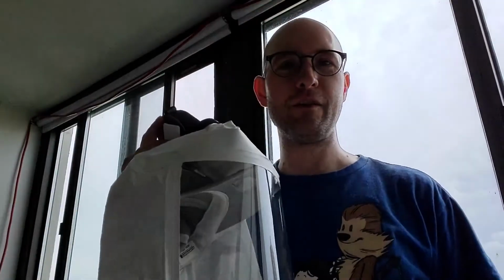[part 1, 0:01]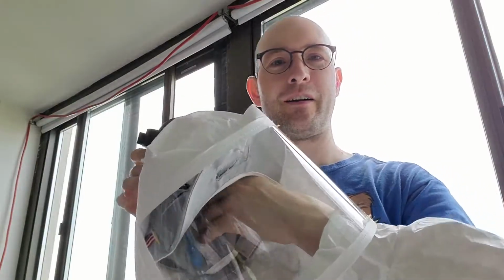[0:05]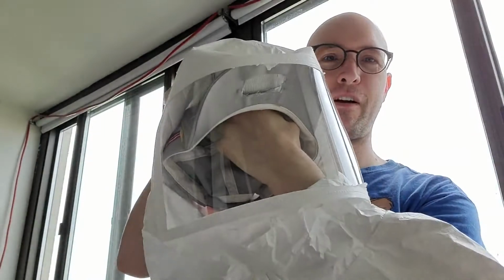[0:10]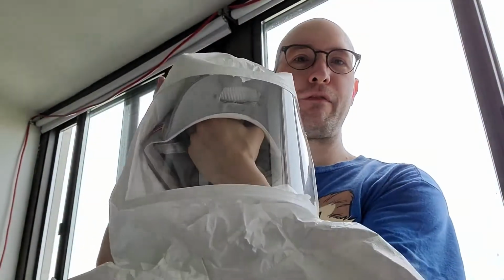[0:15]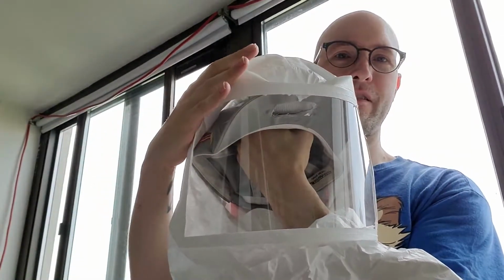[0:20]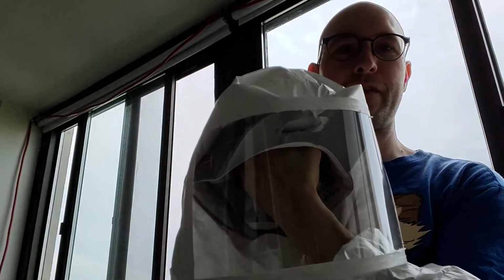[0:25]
Hello, this is my second version of a quiet device to protect from viruses with positive pressure filtered air. You can make this for about $25 if you make the helmet, the hood, which is about $50 cheaper than my initial design. So what makes this design cheaper is I got rid of the hose.
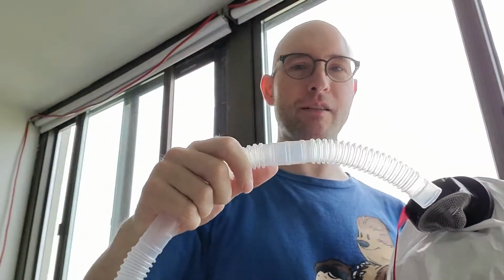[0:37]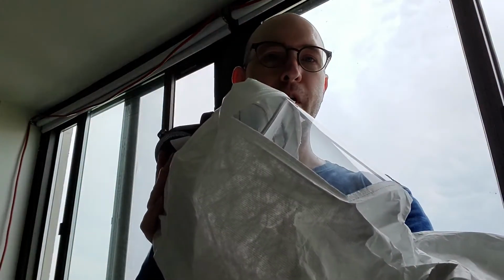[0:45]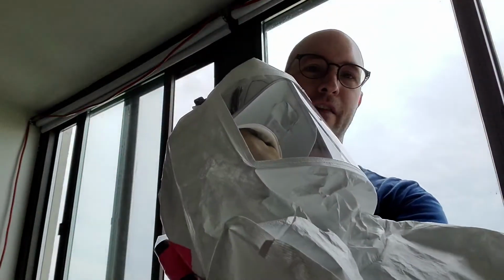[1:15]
The hose itself is about $10, but the hose also restricts a lot of air. So right now this is blowing about 2.5 liters per second. To get the same airflow through this hose, which is 22 millimeters wide, the most common hose that you can find that's made without carcinogens, because it's for people with sleep apnea and it's actually meant to deliver breathing air, I need about 2 watts to deliver the amount of air that I'm delivering right now
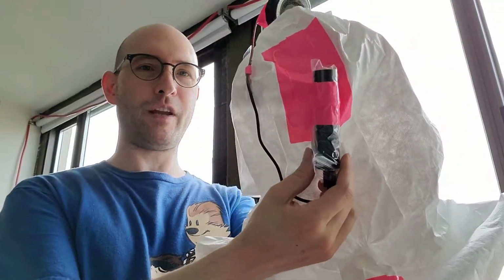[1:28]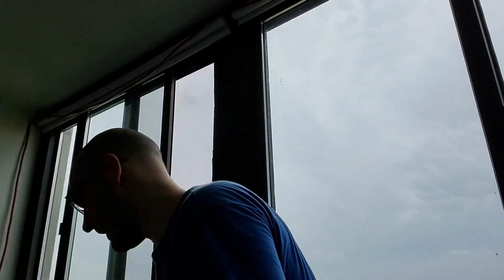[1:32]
without the hose. And this fan is running off just six tenths of a watt, so about half a watt, which means this little battery will run it for about 30 hours. For my first design,
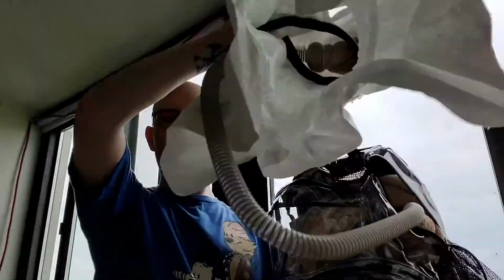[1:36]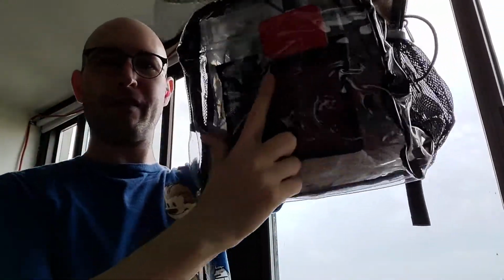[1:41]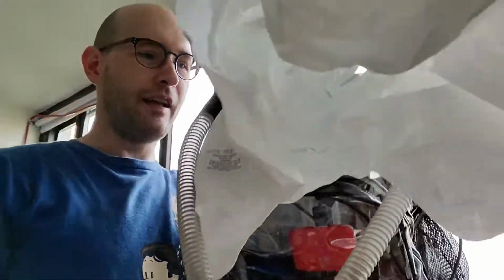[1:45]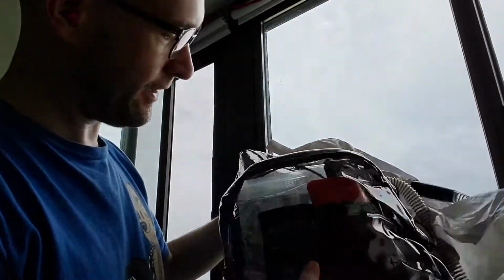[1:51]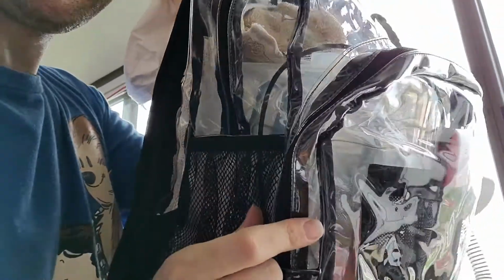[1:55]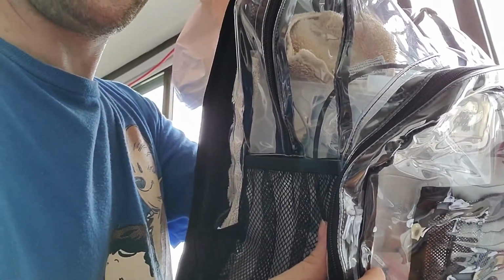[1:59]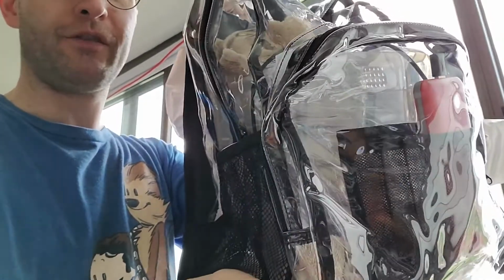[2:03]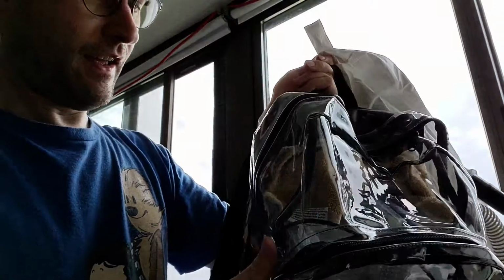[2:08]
I needed a battery like this, which is about $25 if you buy it. And then also it needed to run at more than 5 volts. So I needed another device. Probably can't see through here that well. There's a voltage regulator in here, which ups the voltage to the point where it's running at about 2 watts and I can get the airflow that I need. And so that adds about another $10 if you get 10 pieces, or $6 if you just get one of them, but still adds to the cost.
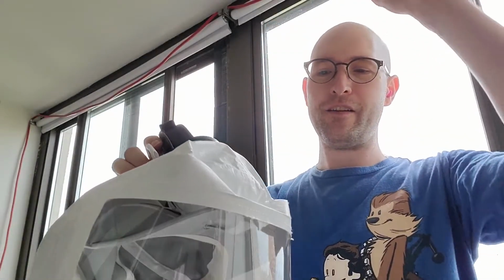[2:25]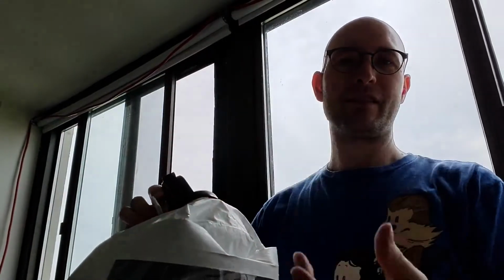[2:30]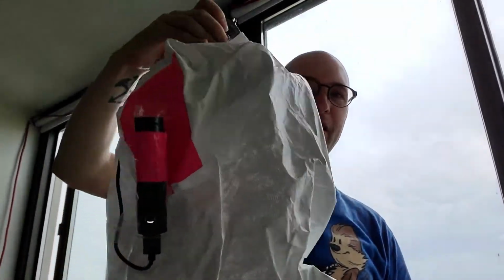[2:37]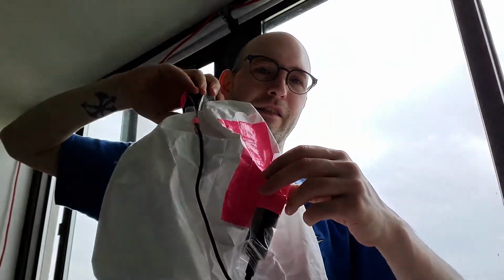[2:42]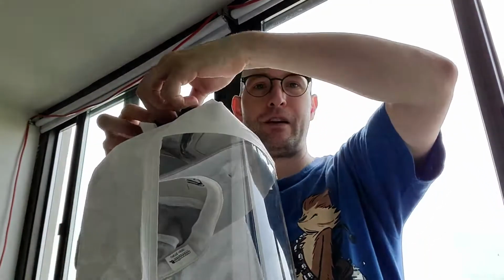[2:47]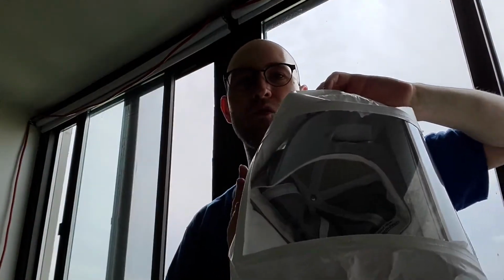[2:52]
So, this one's also a little bit simpler and there's one less connection. So if I had filter, fan, hose, mask, that's an extra set of connections. So I'm also reducing the number of connections, which makes for a more reliable device. So this little battery will run this for 30 hours, just like if I was using the other one with a hose. Also, this is a bit easier to carry around and it's quieter. So I definitely recommend this hoseless design.
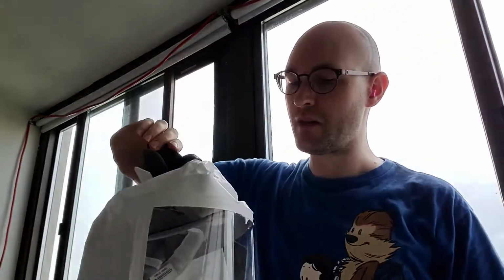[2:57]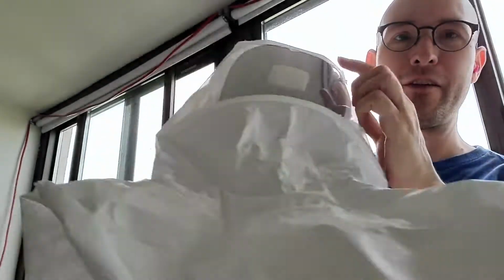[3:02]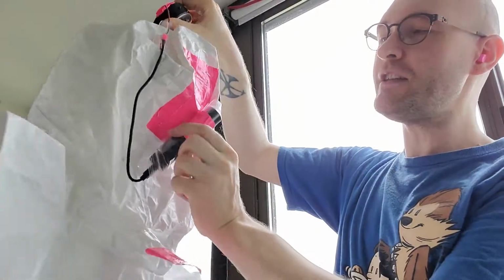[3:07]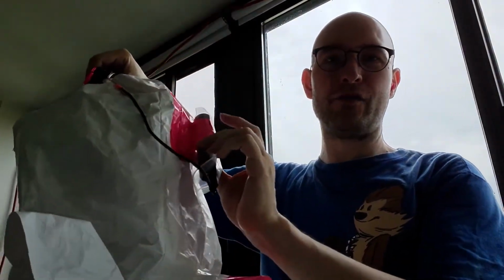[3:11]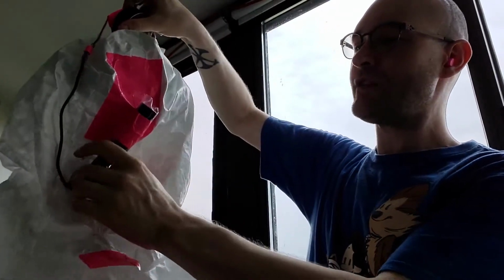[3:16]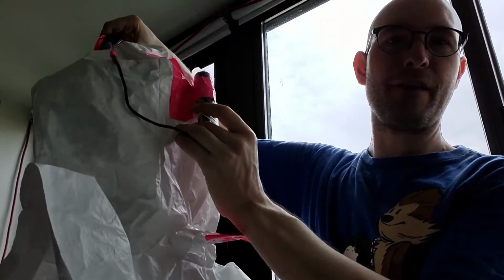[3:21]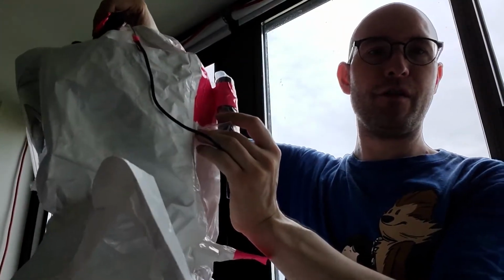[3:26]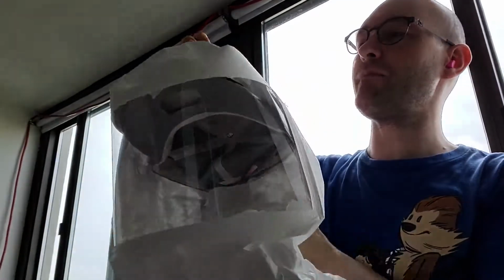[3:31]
So pretty much all you need is a fan. I use a filter from a Roomba. And you need a small power supply. Sometimes if there's a college open house, they'll give away small USB fans. This one's supposed to be 18.5 watt hours. I'm not sure if it's one of the ones that you'd find, but even a very small one would probably easily give you 8 hours, but you'd want to test it to make sure.
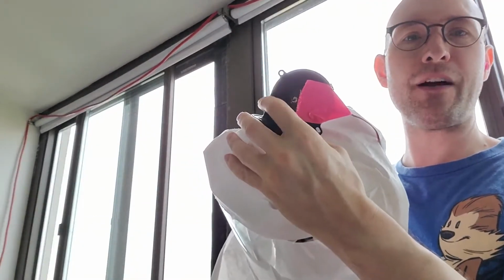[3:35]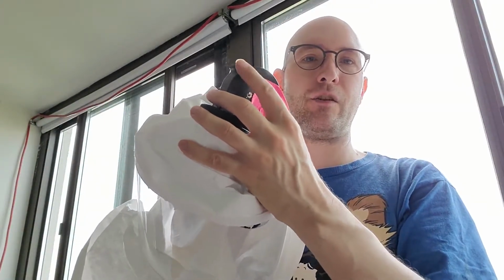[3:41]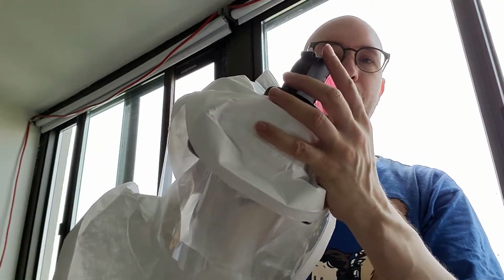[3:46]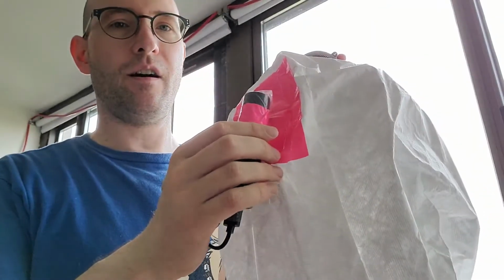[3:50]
And a fan like this, you can often find them on computer graphics cards, the higher performance ones, but if it's like 10 years old, someone might be getting rid of it, and you could get a fan like this from that. So you could make something like this with a bit of scrounging and actually make it without paying any money. I'm working on a mask.
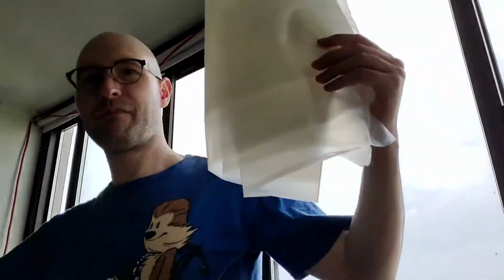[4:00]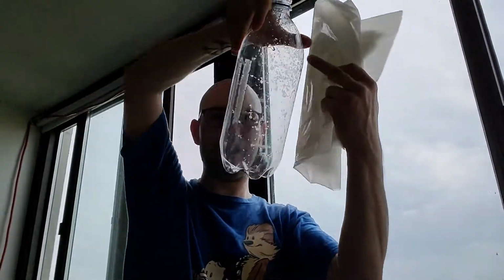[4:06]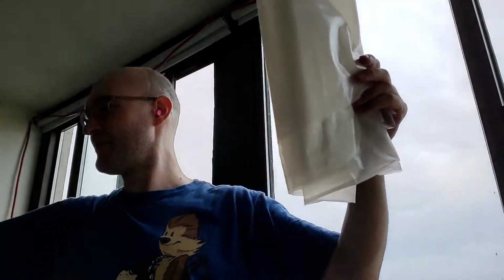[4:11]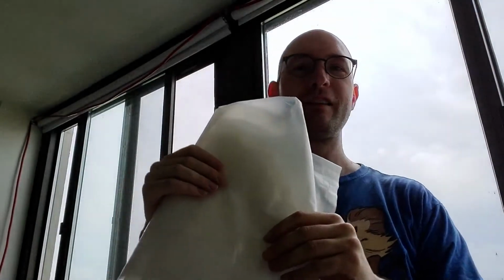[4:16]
You can use a bag and 2-liter bottle, just cut the bottle open and then figure out a way to attach it to the bag. Easier said than done. But a big advantage to this, and literally big, is because if you're using a whole bag, you could have maybe an elastic strap that you could release and let air into the wider part of the bag, and you could actually eat inside of the filtered air environment.
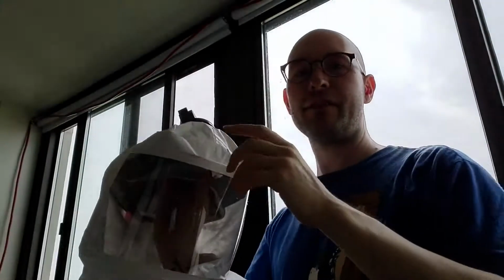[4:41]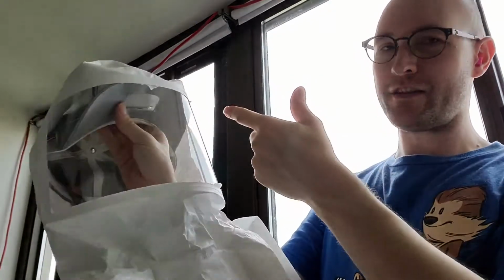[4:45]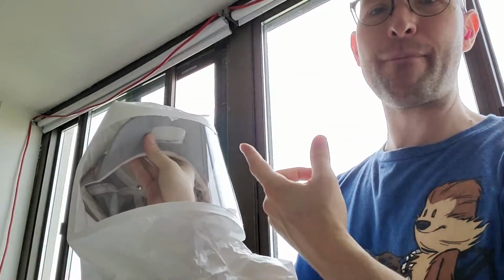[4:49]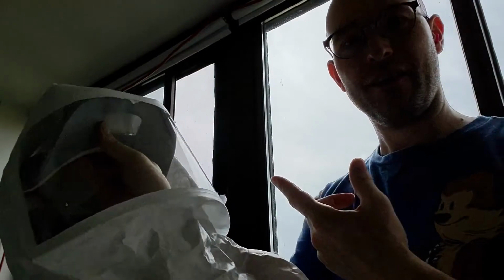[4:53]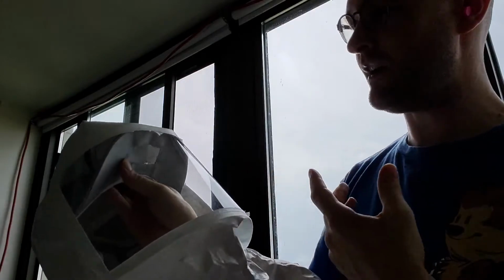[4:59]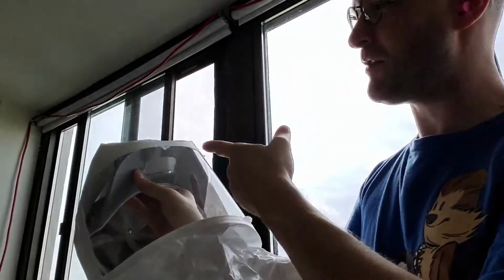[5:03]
So this fan you can get for about $9. The filters are about $1.30 each. They're advertised as HEPA replacements for Roomba, though we'd need much better consumer protections to guarantee something like that. If someone could actually test one of the filters, that would be great, then we could know exactly how to do it.
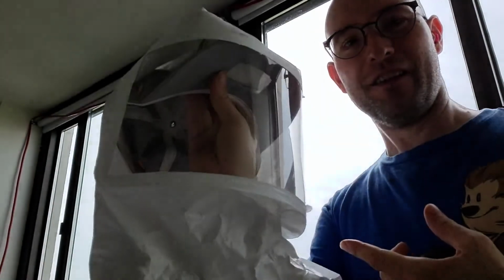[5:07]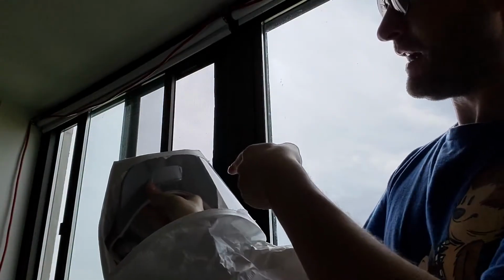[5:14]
Eventually, I might actually get around to setting up a test for that, but no immediate plans of doing that.
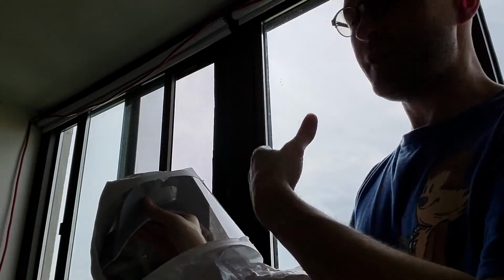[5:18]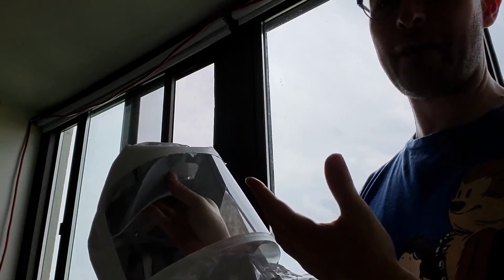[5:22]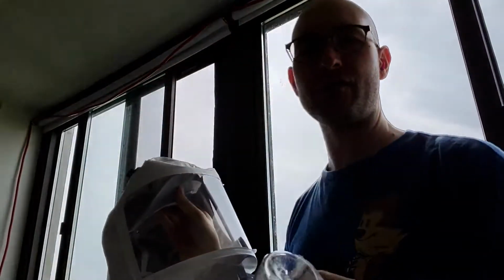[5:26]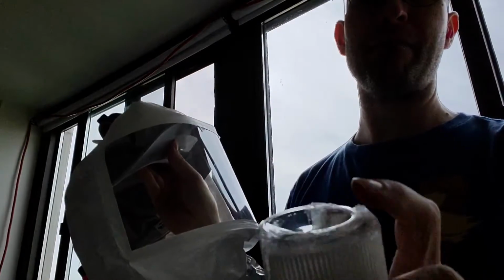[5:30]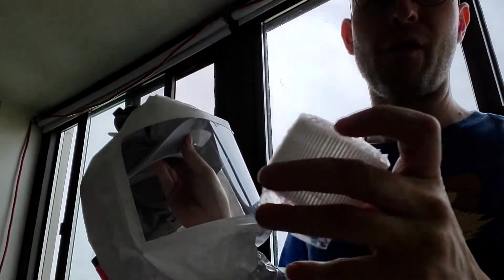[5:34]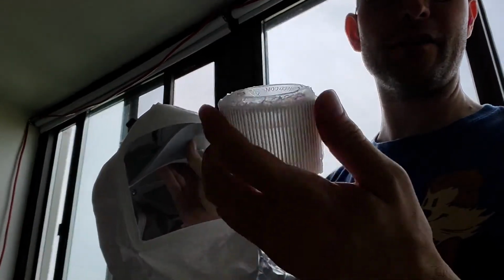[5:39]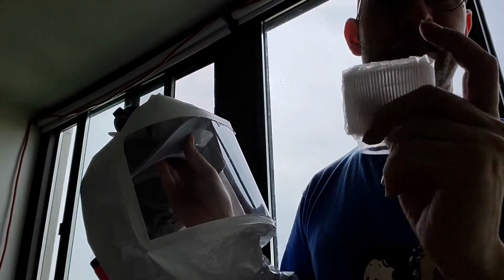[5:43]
In any case, you can get a set of 6 of these filters for $7. If you share them, then it's $1.30 each. I recommend removing them from the original housing and then mounting them so that there's a layer of glue all the way around the outside. This is to make sure that the only way for air to come in from the outside to the inside is if it goes through the filter.
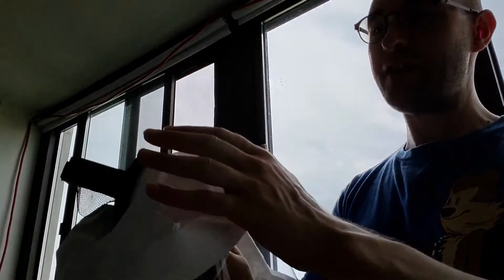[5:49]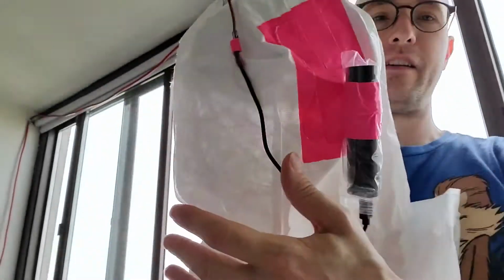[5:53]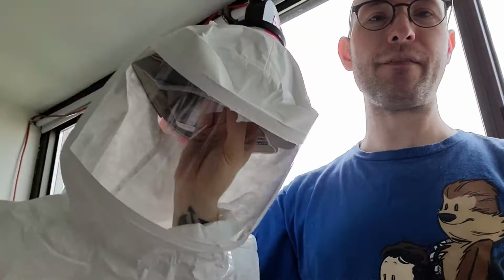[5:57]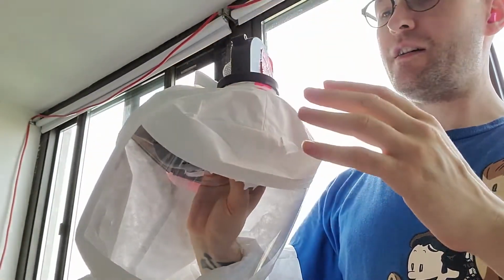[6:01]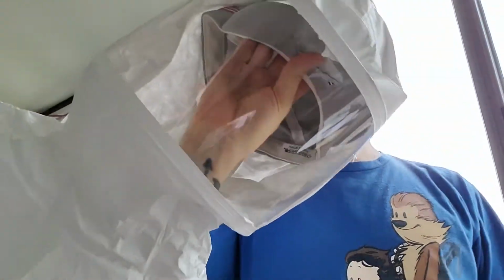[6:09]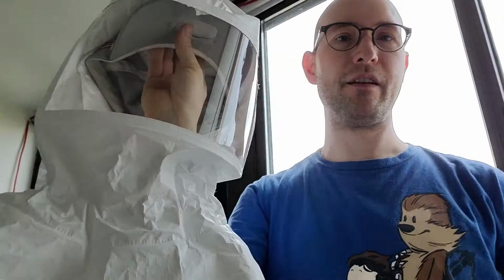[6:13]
So that's $7 and this fan is about 9, so that's 16. And then you can get one of these for about 10. So for about $25, you can make this setup. If you buy the hood as well, then it's close to 50. This is a $23 hood. Again, use the hoseless design, you save a lot of money.
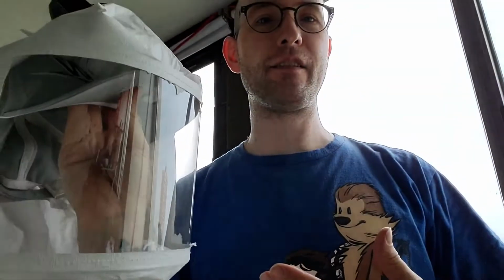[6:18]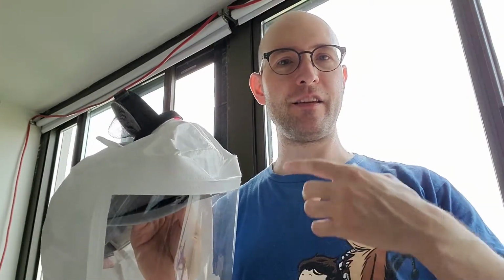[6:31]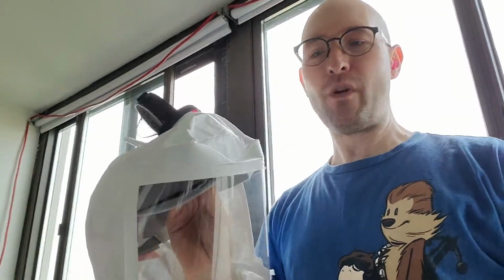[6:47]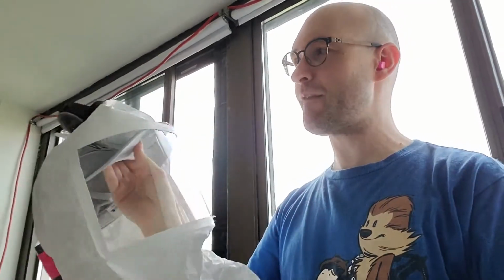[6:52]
This is blowing out about 2.5 liters per second. If I breathe in fully and out, that takes me about 2 seconds, and that's half a liter of air. So in the same 2 seconds, this blows in 5 liters of air, which is like 10 breaths every 2 seconds. So it's blowing in air at least 10 times faster than I would breathe if I was hyperventilating. And that's what makes this positive pressure type of apparatus safer.
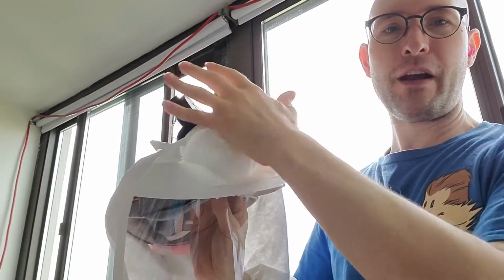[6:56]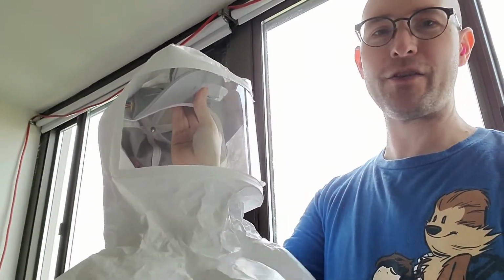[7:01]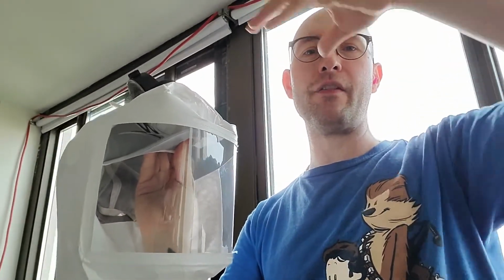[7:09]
Your filter is only as good as how much you guarantee that you're only breathing in filtered air. So with a normal mask, a lot of air comes in through the side. Having this positive pressure ensures that all of the air is filtering.
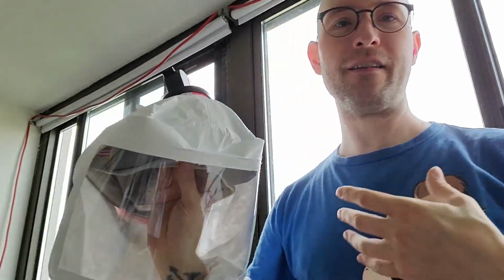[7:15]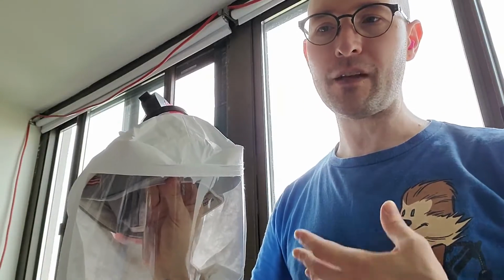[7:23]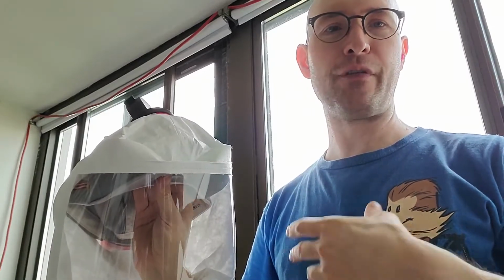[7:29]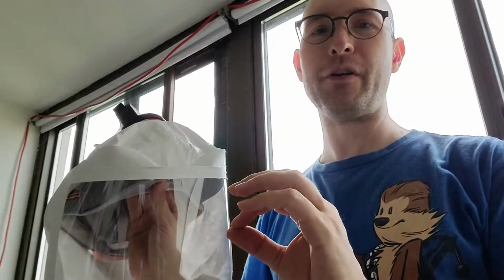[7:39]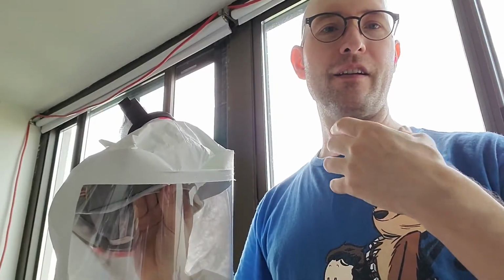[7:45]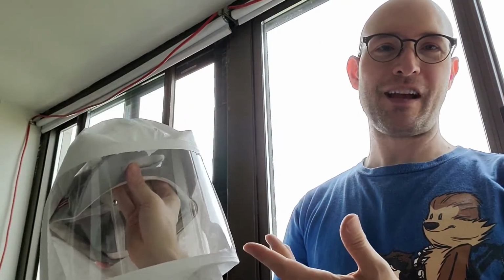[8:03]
So if this is actually HEPA, then HEPA, there's like 2 standards, 99.97 and 99.95. Let's say it's at 99.95. What you want to look at is how much air is getting through. So if I compare that to N99, you have 0.05 comparing to 1%. Now, both of those are small numbers, but if you put it in context, they divide 1% by 0.05, and I find out that a HEPA filter is going to filter at least 20 times as many particles. If it's the 99.97 standard, 30 times as many particles as N99. Sadly, of course, I can't guarantee that this is HEPA, but in any case,
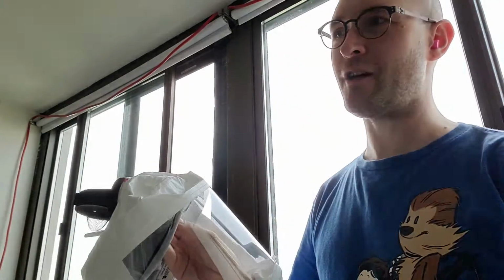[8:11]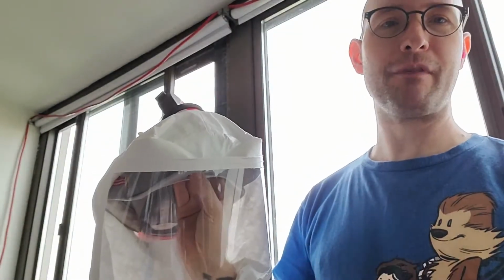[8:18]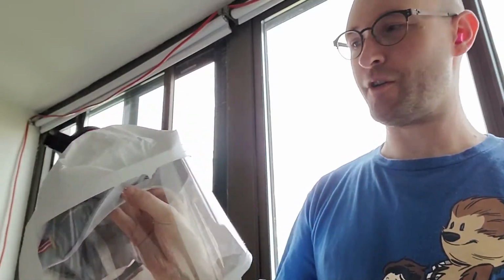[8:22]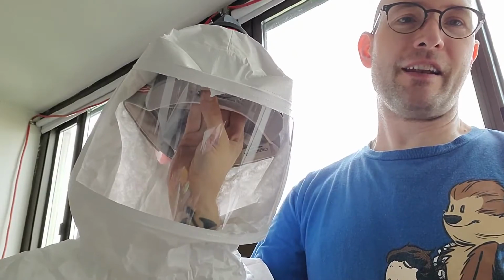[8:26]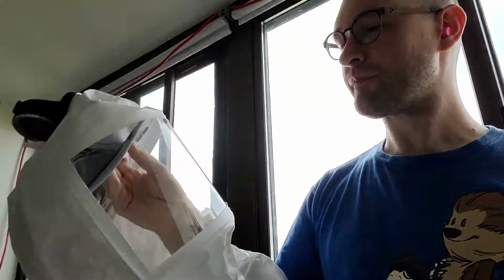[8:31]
I've used these in my vacuum for a long time, and they're at least very good at keeping dust from getting into the clean air side of the vacuum cleaner. So I'm confident that these would be at least N95, but you'd have to test them to be sure. But I don't have to worry about any leakage.
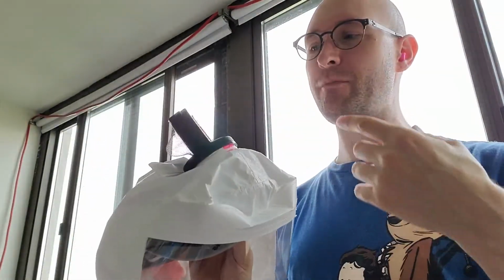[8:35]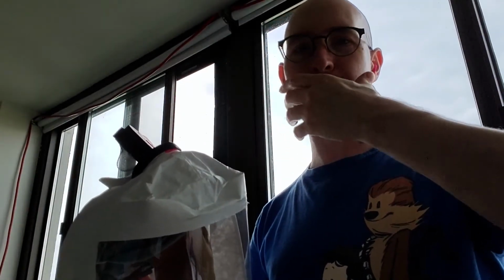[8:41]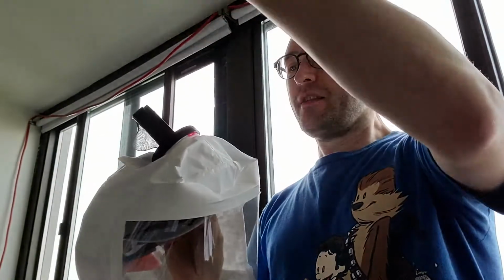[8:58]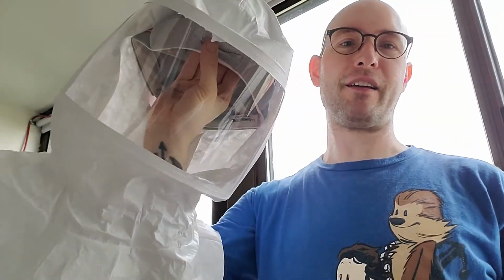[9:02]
So this is going to be much better than any mask around your face, because no matter how good the filter of the mask around your face is, you'll be pulling in at least 1/10 of the air, especially if you have anything that's going to prevent a tight seal, like I have some stubble here. Then, especially if you wear a beard, you want to wear something like this.
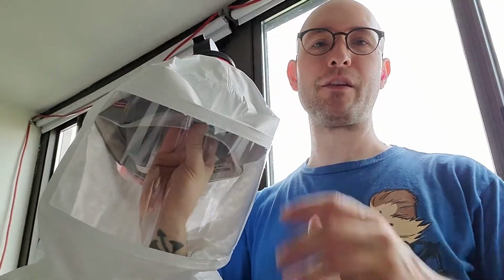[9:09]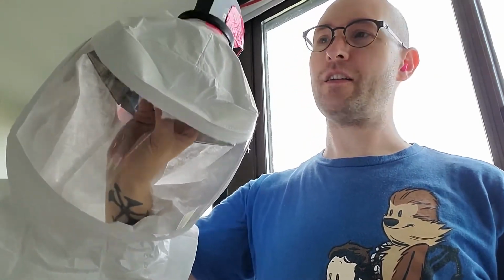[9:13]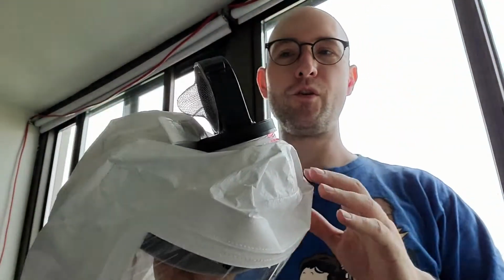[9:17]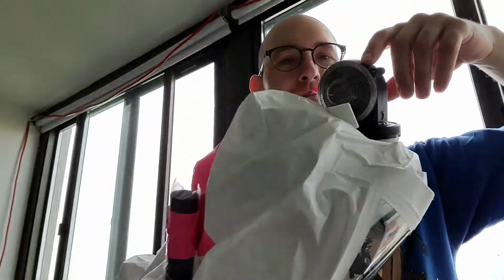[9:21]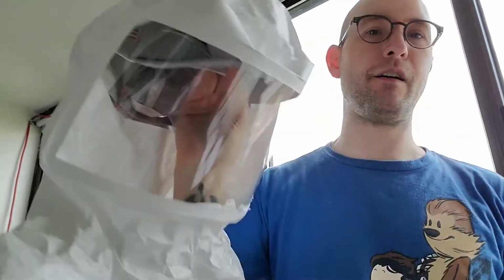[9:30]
So I hope this video helps you and you do this project. As I said, if you make the hood yourself, it's $25. If you buy the hood, then it's going to be about $50. If you actually make the hood, find a fan like this, say from an out-of-date computer graphics card, and scrounge for any USB power source, then you could actually make this without any money, just time and effort. Hope this helps.
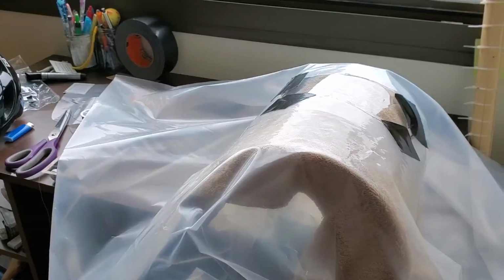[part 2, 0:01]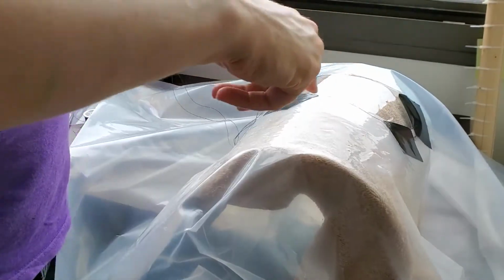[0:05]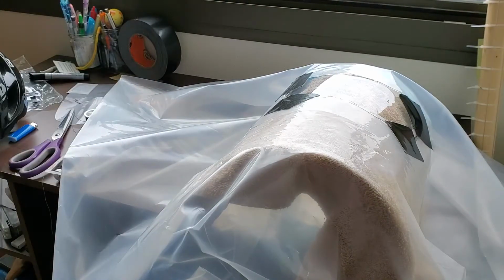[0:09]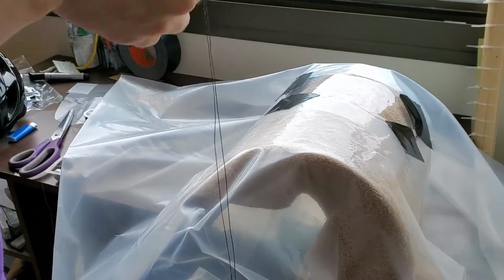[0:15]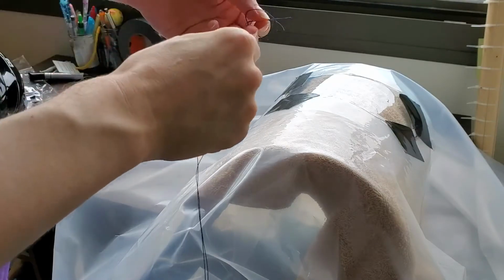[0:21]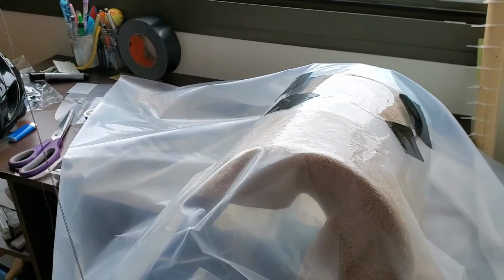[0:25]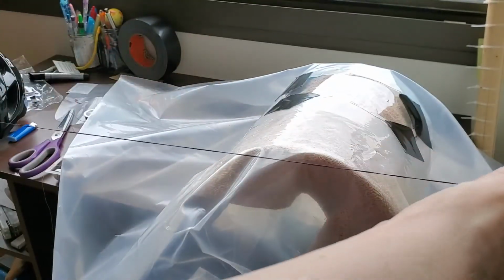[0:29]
This video is about stitching a visor to a bag to make a hood for a powered air purifying respirator. I'm going to use doubled up thread just because it's twice as much security for the same amount of work.
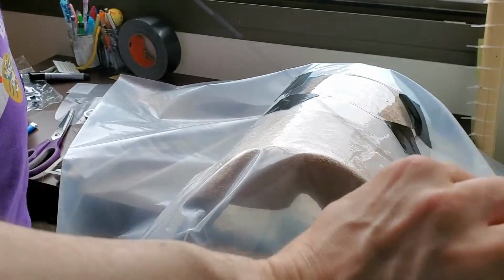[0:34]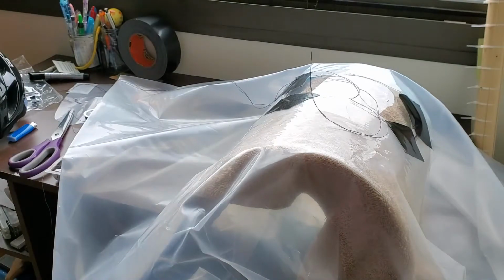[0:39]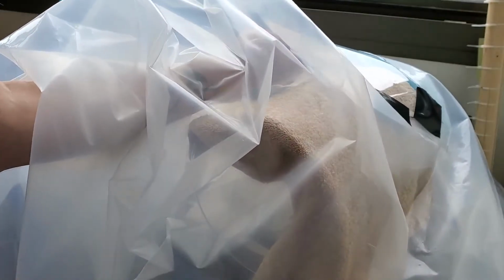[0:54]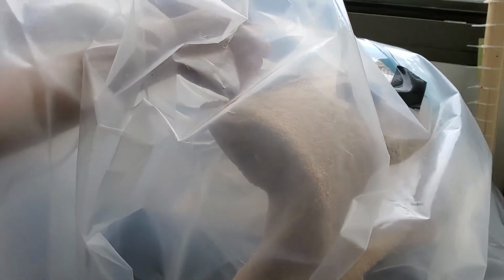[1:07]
If you're sewing through very heavy plastic like a 2-liter bottle, I recommend making the holes first with a hot needle. But this material I can go through. I'm using a very thin visor, which would be similar to transparency paper.
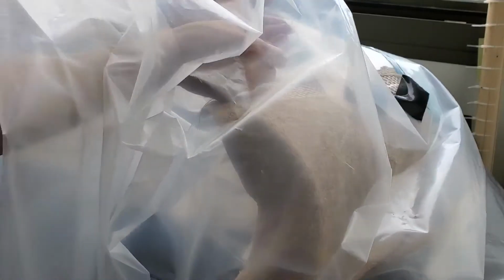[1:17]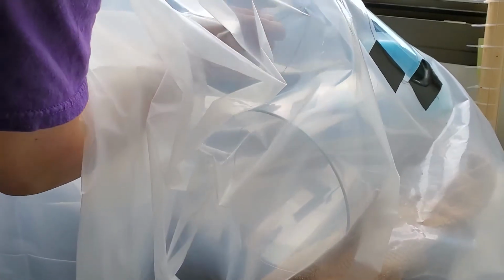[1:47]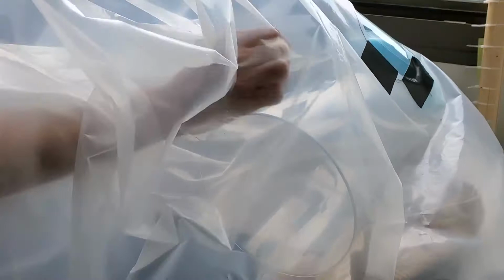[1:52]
I'm going to try to stagger the holes just a little bit. Could stagger the holes to make it a little bit more durable. I'm actually going to try to make this go quickly, so instead I'm just going to try to sew before this comes apart.
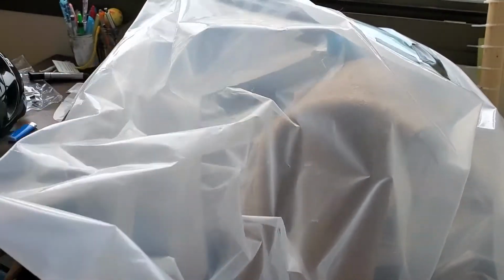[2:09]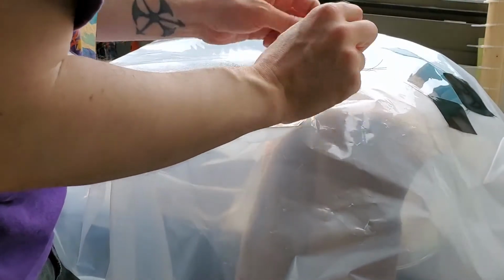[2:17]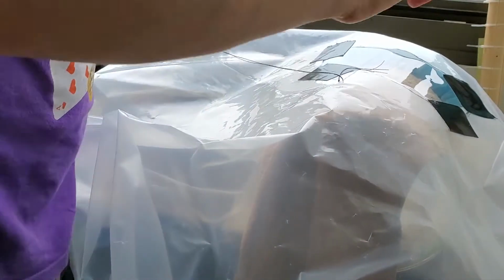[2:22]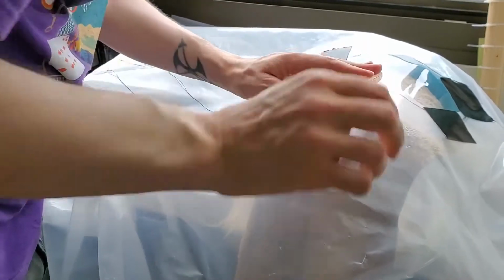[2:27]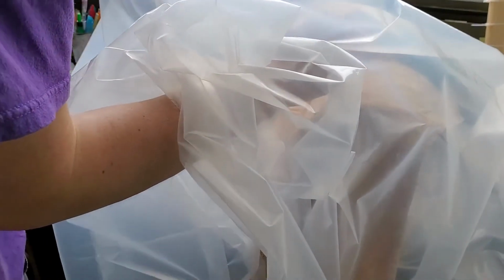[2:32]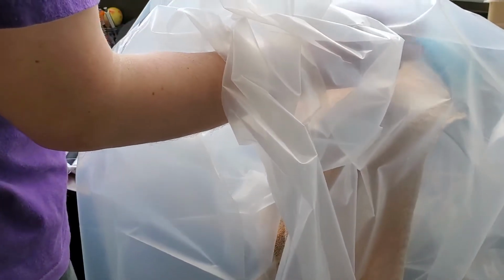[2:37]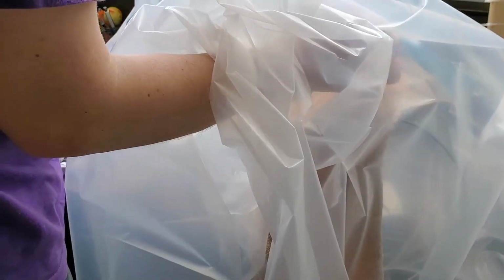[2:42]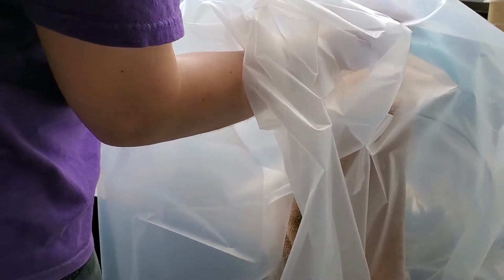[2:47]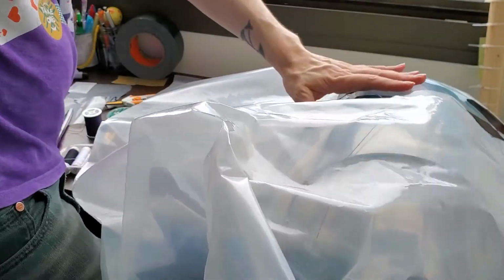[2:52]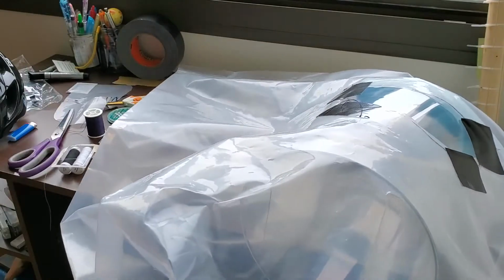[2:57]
Struggling with this, I'm actually thinking that it could possibly have been wise to try trimming this bag first before working with it. There's a towel that I'm using to avoid scratching the inside of the visor, slipping up. I'm going to try folding some of the excess of this bag over just to have an easier time sewing.
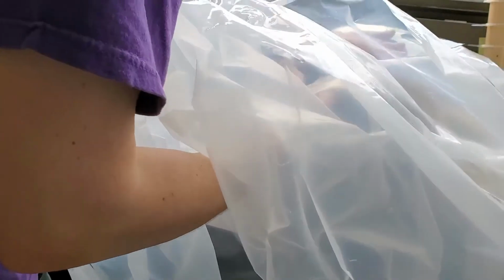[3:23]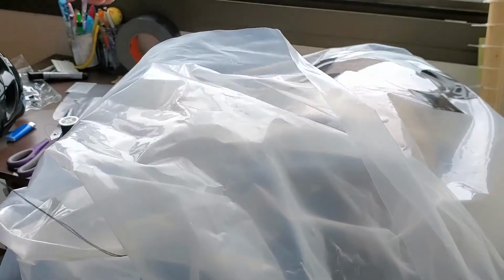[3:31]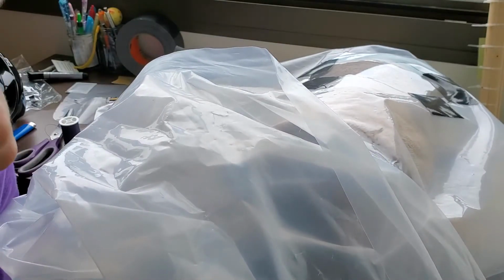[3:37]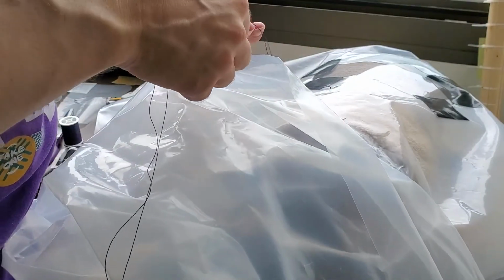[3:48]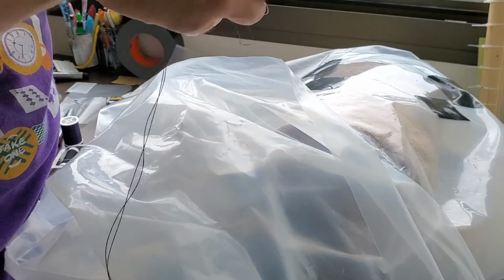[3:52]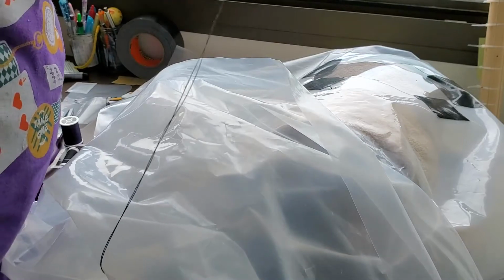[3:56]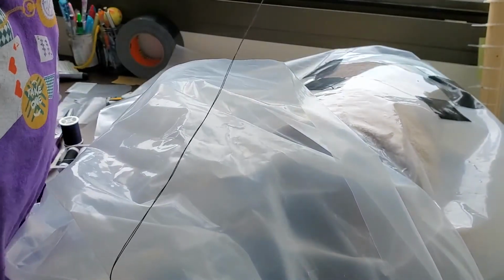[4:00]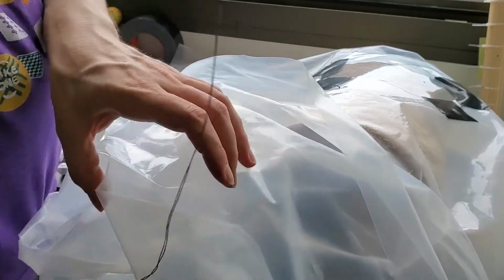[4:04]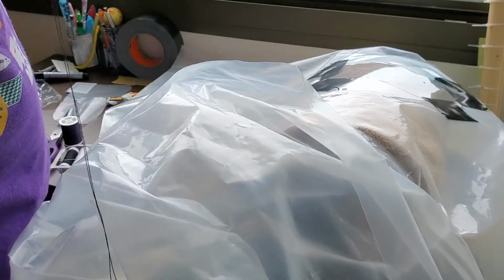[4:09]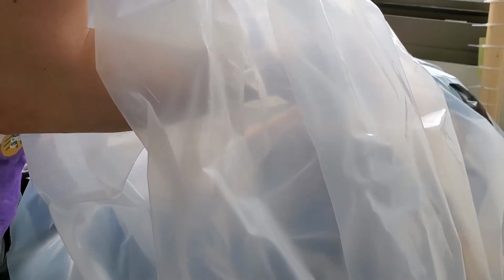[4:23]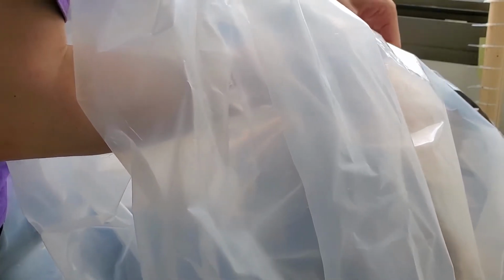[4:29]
Looks like I might have already managed to get this tangled up. It's amazing how thread just seems to form knots. There's an entire series of mathematics dedicated to the theory of knots. Oh, and it looks like my initial seams are not quite as tight as I would like them to be. Okay, and that was
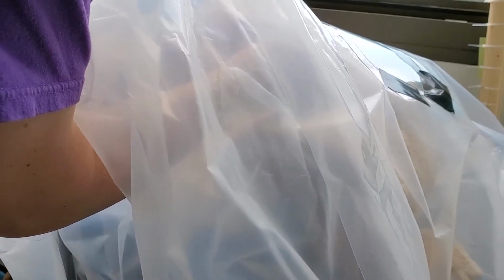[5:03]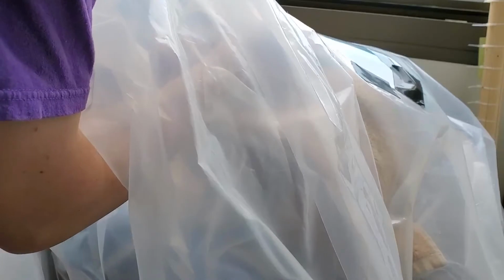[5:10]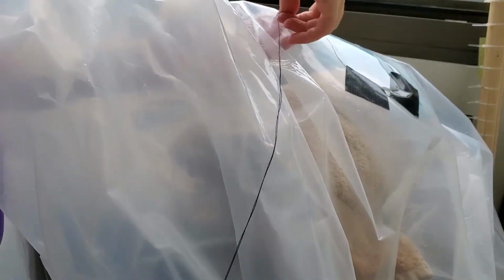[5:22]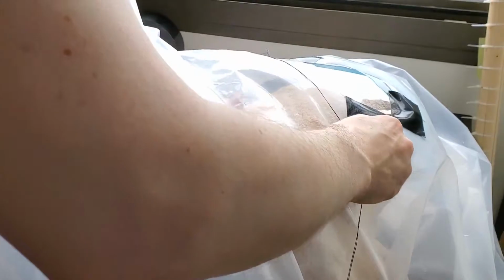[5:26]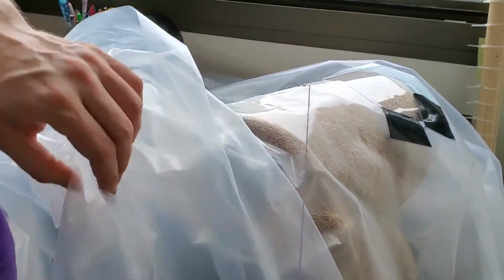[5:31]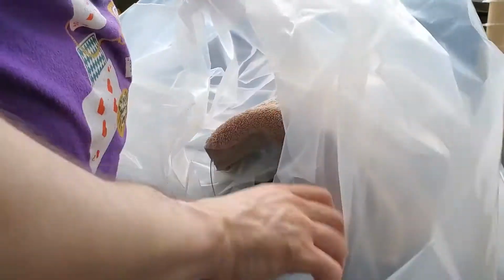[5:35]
Try not to actually sew yourself. Very easy. Poke a hole in skin with that needle. So I'm going to keep one hand to hold the thread tight while I use the other to put the needle through. All right. While sewing, you don't want the thread that you already sewed to become loose. That's what was just happening there. All right.
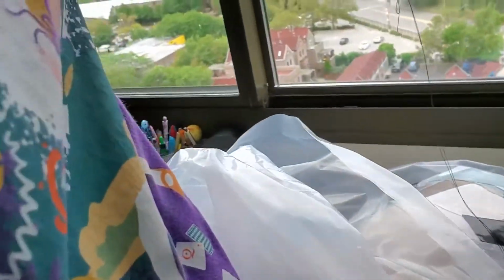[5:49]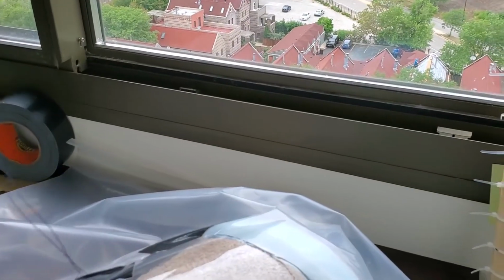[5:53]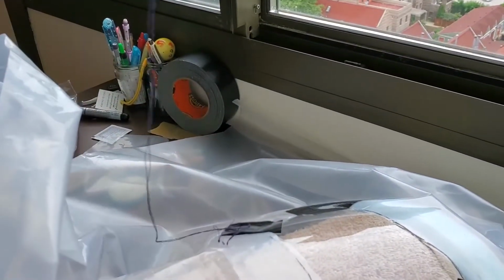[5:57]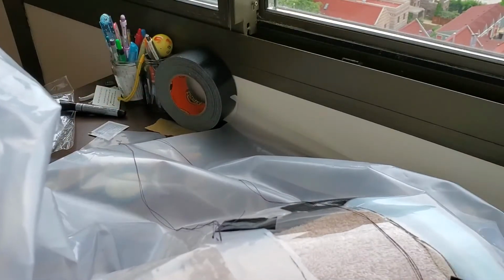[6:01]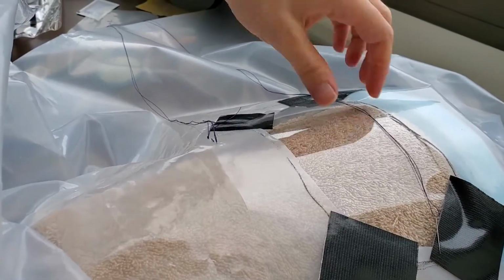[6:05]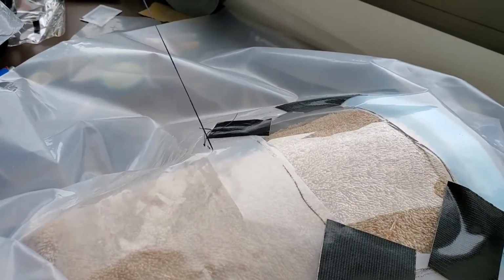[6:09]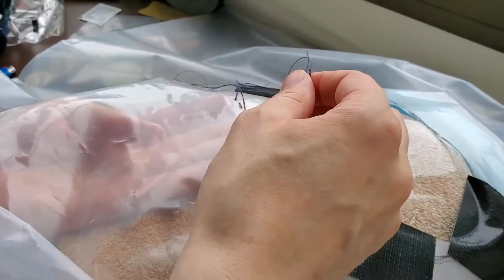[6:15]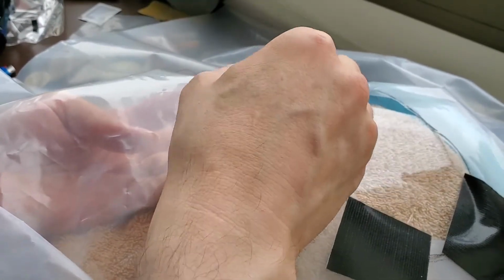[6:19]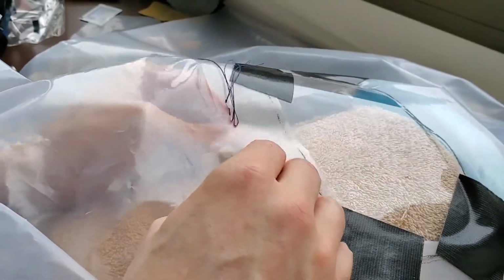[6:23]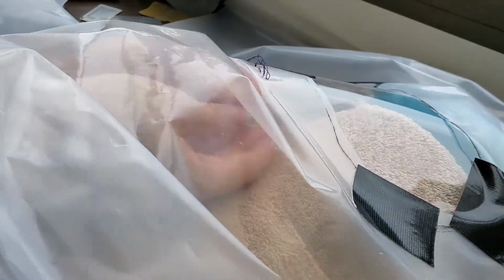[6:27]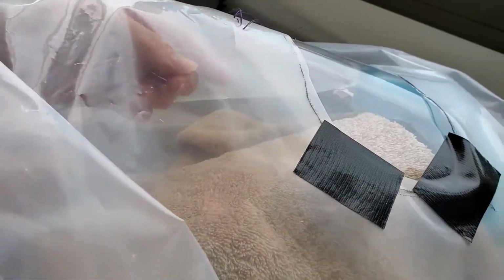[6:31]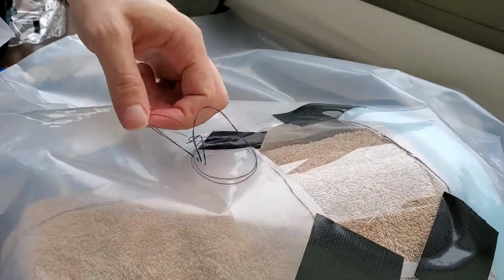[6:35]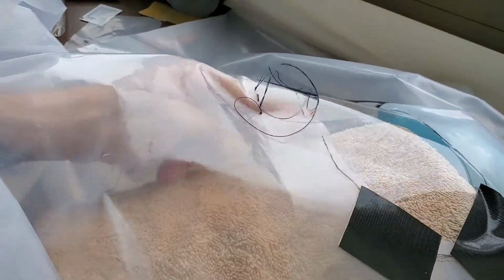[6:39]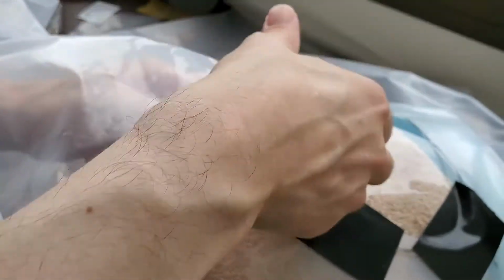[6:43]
See, right now this camera doesn't have a very good view of what I'm doing. See if I can change that without tangling up the thread. And this will probably take more time than I can record on this camera. I have a limited amount of memory. You'll probably find lots and lots of videos online about how to sew, and that's all that I'm doing. The big thing is, as I sew, trying to avoid tangles.
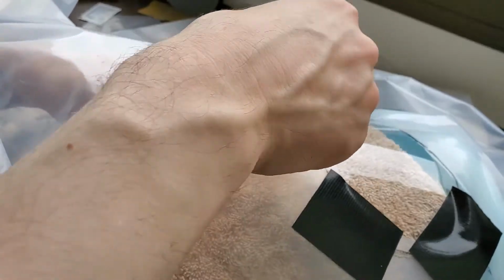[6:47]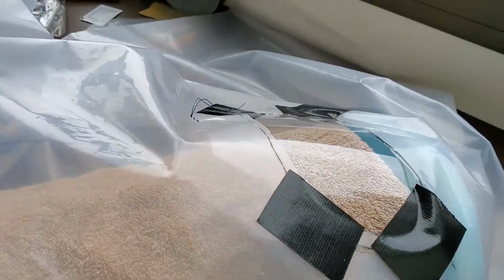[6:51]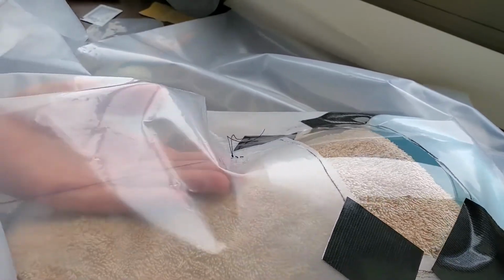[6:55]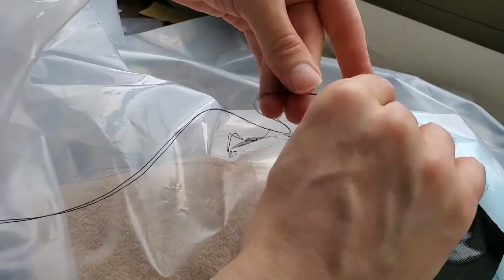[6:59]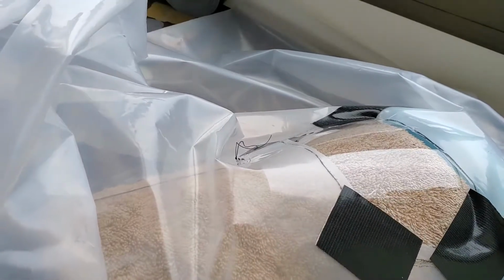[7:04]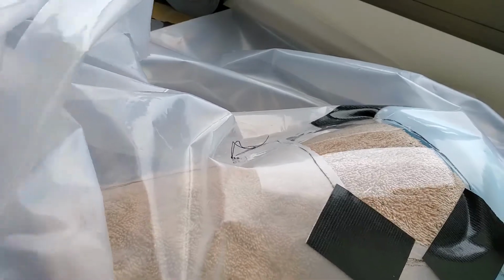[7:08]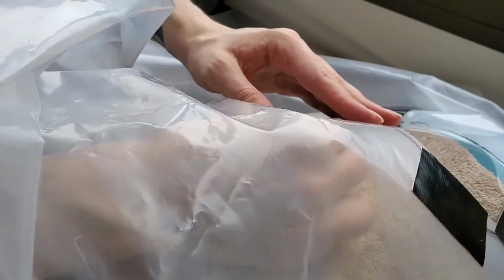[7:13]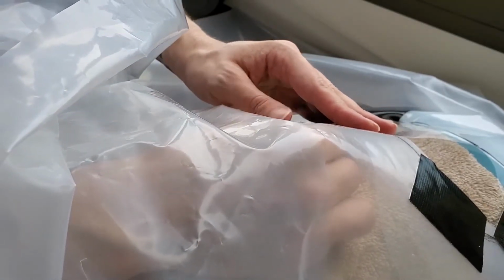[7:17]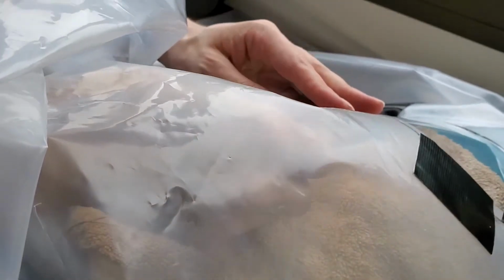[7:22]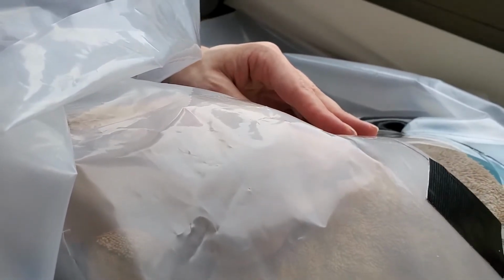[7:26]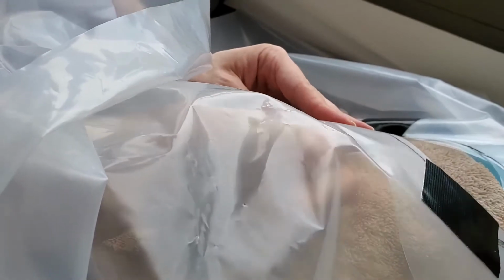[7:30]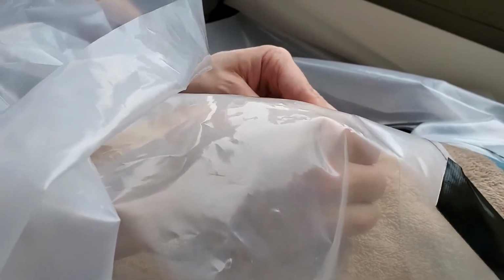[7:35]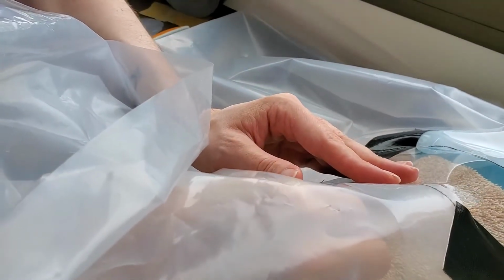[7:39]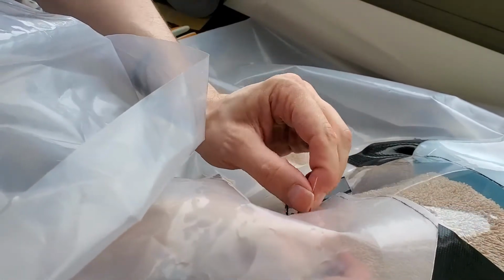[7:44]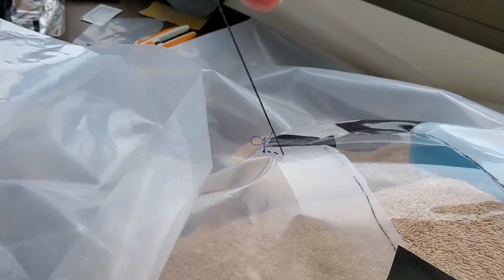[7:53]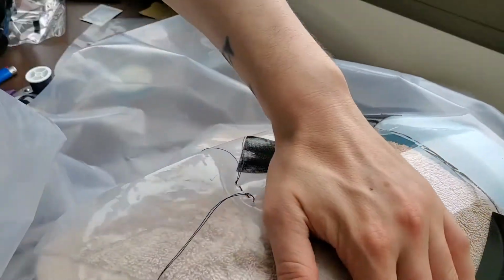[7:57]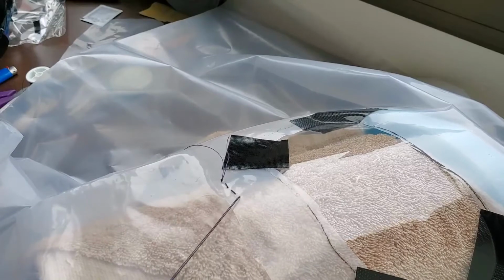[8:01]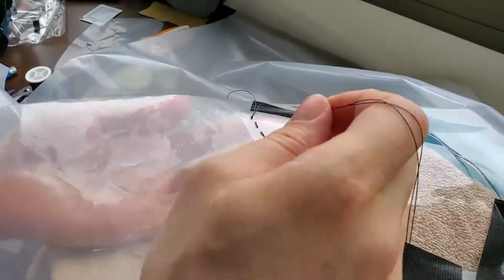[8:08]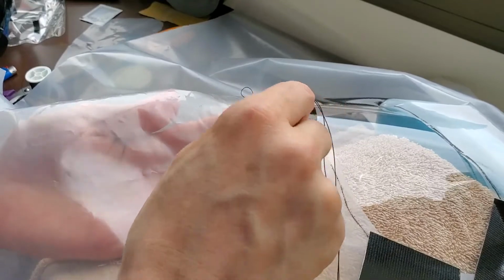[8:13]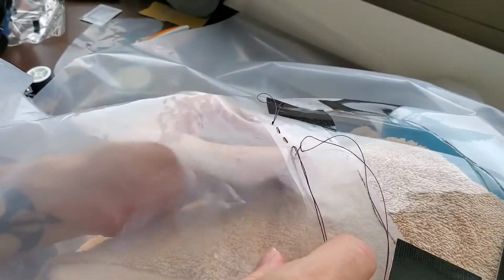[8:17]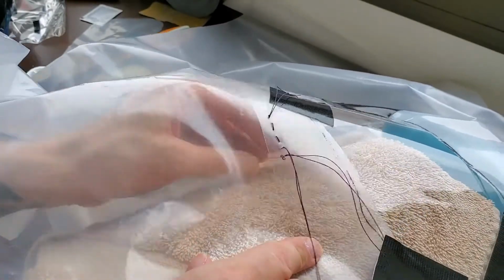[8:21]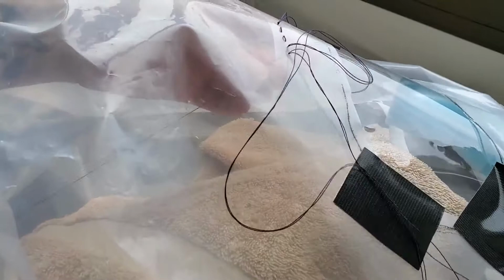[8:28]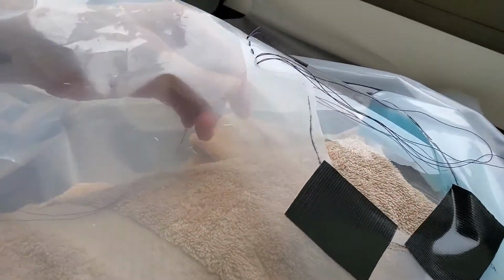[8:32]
You can't see this on camera, but I'm straightening out the thread between each pass to reduce the sort of tangles that you just saw me straighten out. I'm trying to make a stitch about every, say, 5 millimeters is my spacing. Oh, now I'm having a tough time. Bring this through. If you decide you want a finer stitching, you can always go back after you've made an initial stitch, because the initial stitch will hold the plastic in place. Again, between each pass, try to straighten out the thread if you're using a double thread like I am, and try to avoid tangles.
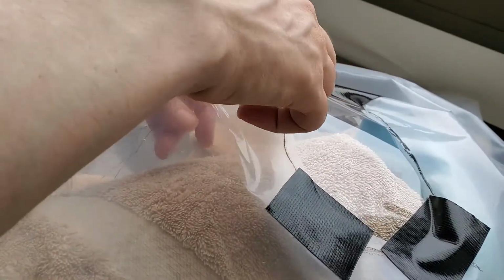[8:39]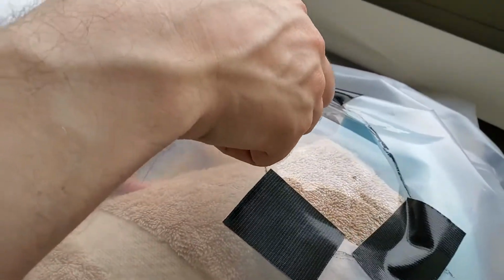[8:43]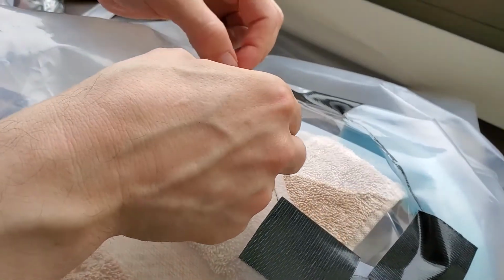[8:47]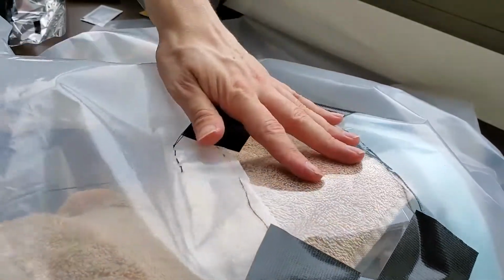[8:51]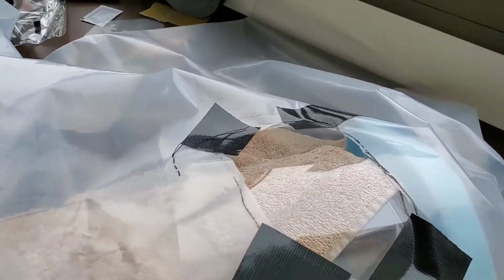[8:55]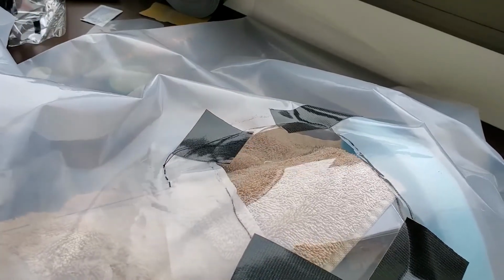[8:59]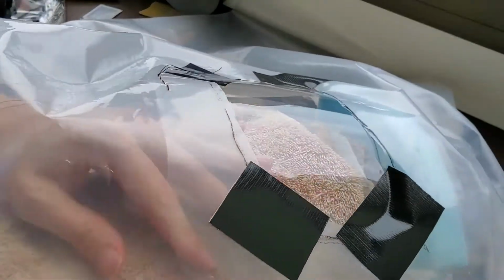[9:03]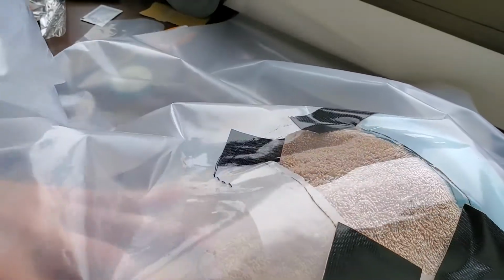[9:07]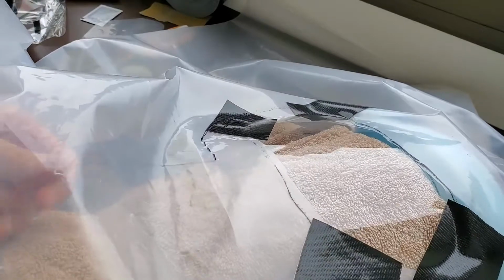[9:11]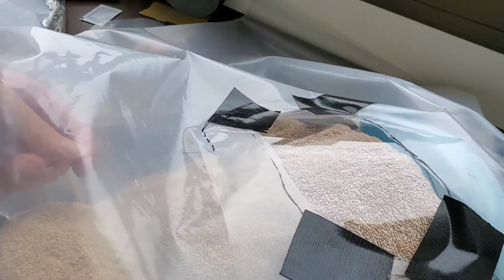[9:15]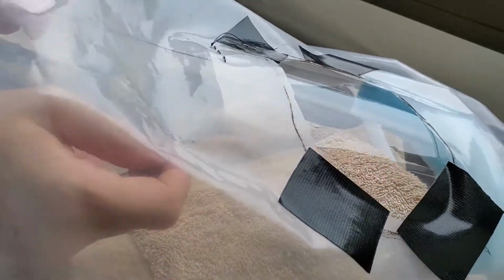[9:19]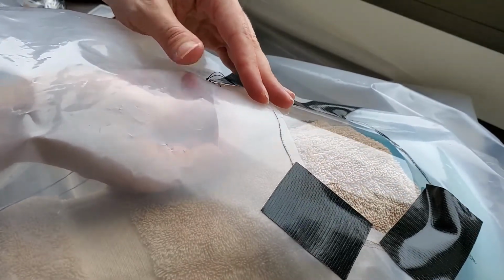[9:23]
I will probably go over this with a layer of glue once the stitching is all done. Small holes in this type of mask are okay because the air on the inside of the mask is at a higher pressure than the air outside. So a little bit of leaking is fine because the filtered air on the inside will leak out instead of having the unfiltered air leak in.
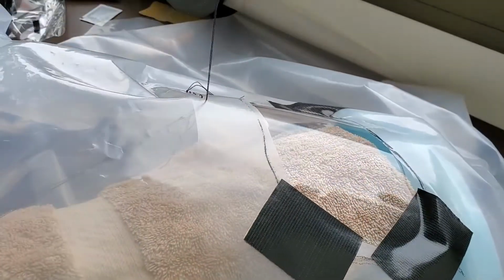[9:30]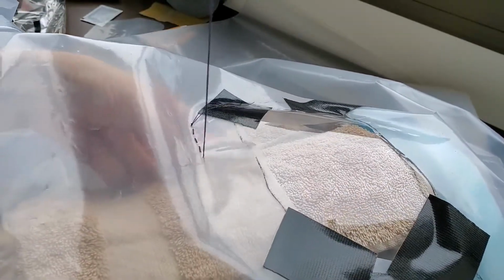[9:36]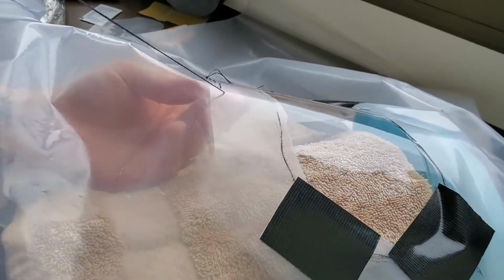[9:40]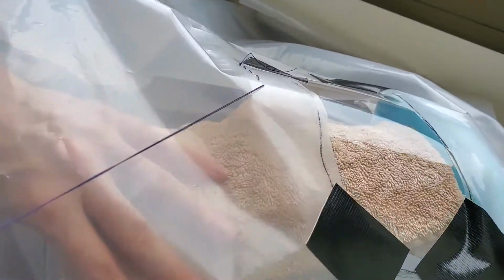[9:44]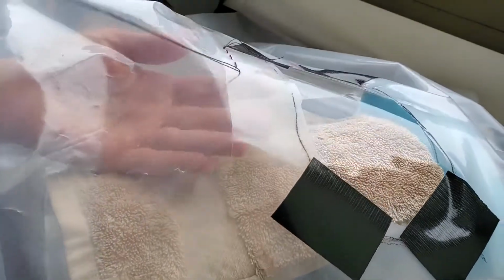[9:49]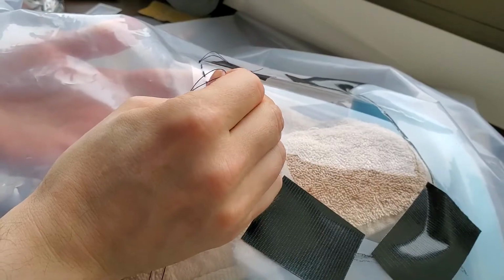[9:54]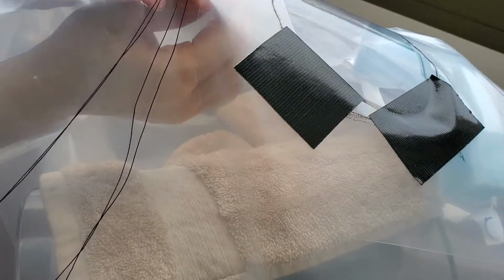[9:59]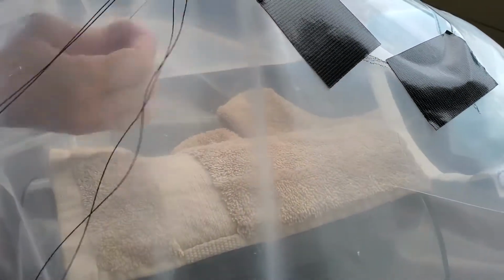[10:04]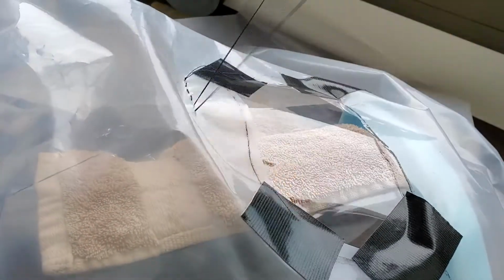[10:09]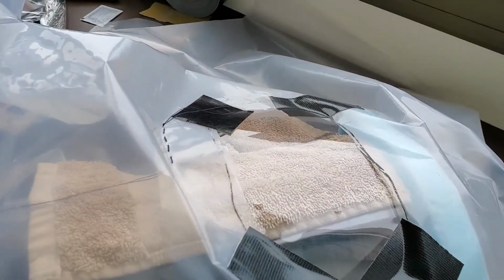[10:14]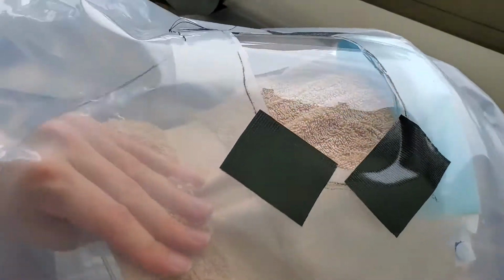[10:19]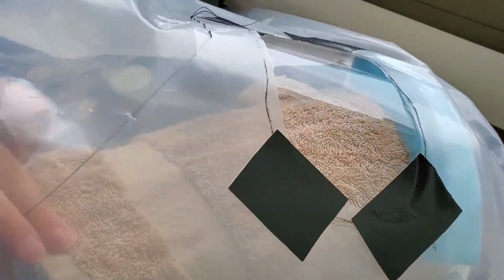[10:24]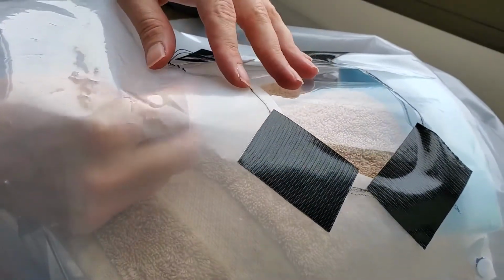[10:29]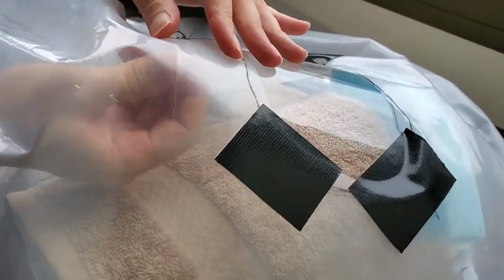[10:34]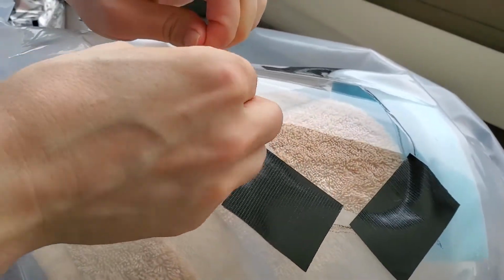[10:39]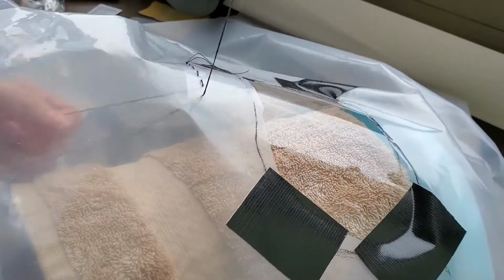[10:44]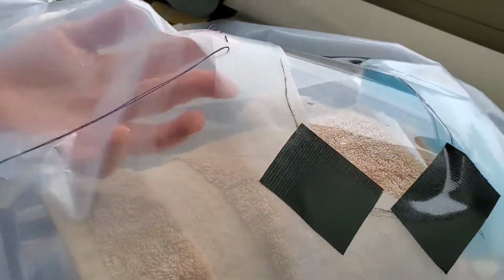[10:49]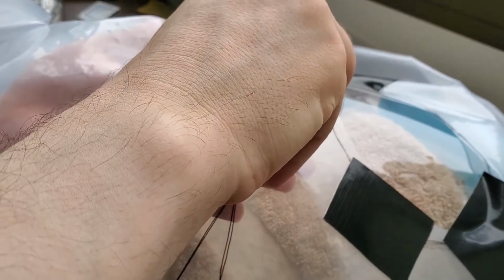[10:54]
This cord is really quite determined to tangle, so I'm just doing my best to avoid that. So far, so good. I think that's a little more than 5 millimeters. That looks like it's probably closer to 10 millimeters, or a whole centimeter. So I'll try to be more patient.
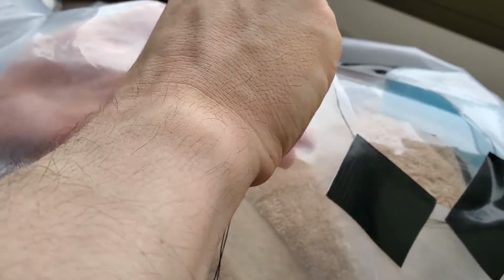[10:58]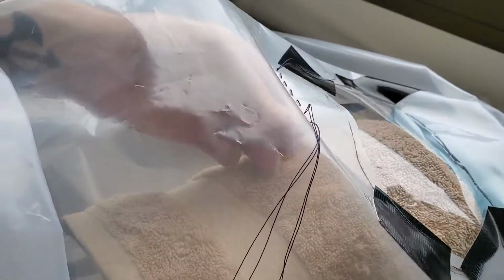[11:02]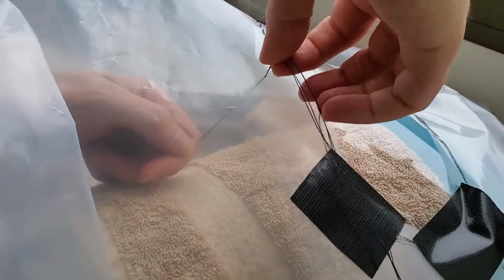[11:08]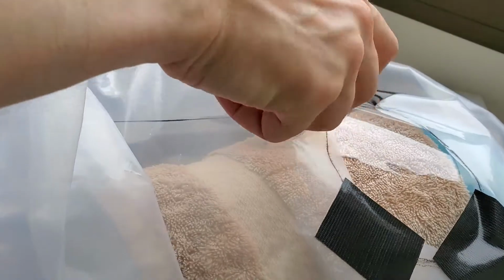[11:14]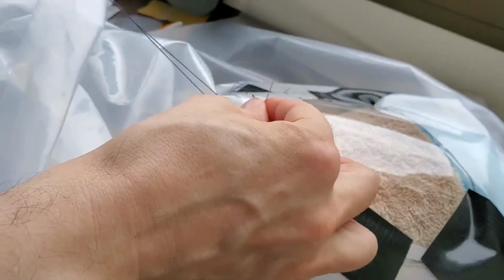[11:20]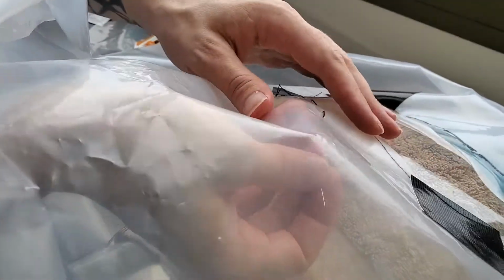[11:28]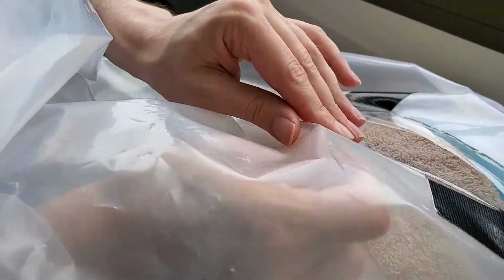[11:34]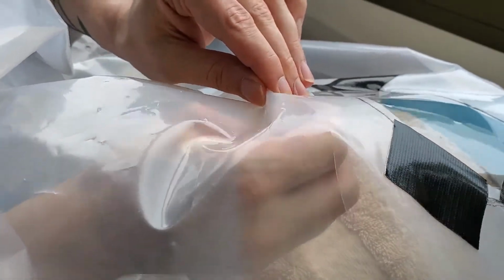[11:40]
Even though I'm sewing in a straight line, something you might want to consider, especially if you're making larger holes, is to stagger them so that they're not along a straight line, because that could make it easier for the material to rip. But I'm placing them small enough, far enough apart relative to the thickness of this needle, that I think I will be fine. I'm not expecting this to tear along those holes.
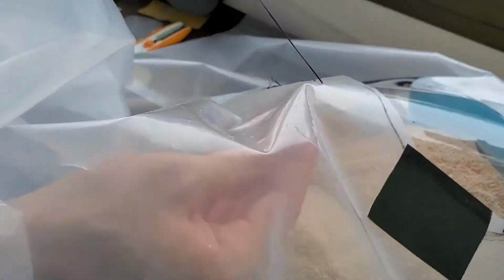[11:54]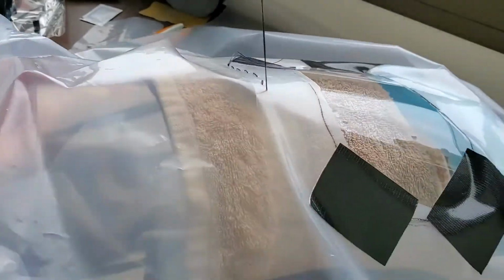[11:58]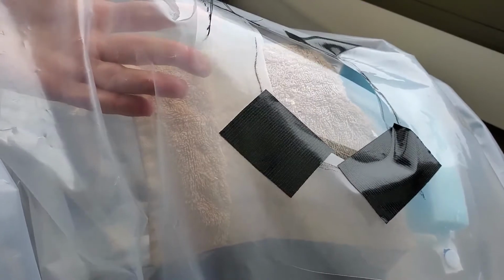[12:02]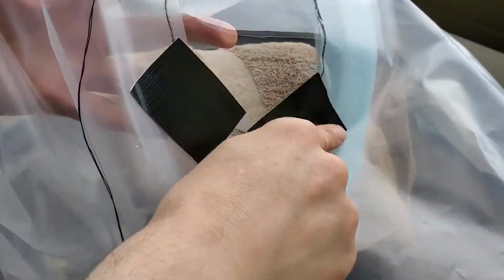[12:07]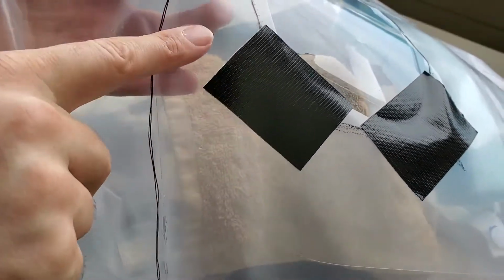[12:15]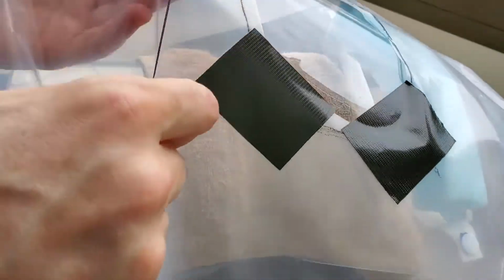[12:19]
I'm just going to repeat this process going all the way around. As I'm going, try to make sure that the mask is staying in line with how it was taped.
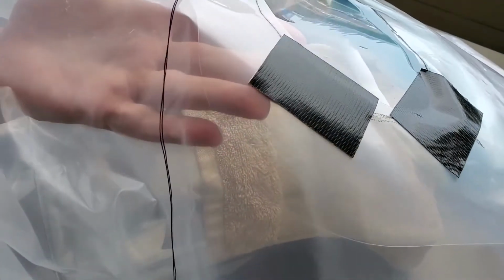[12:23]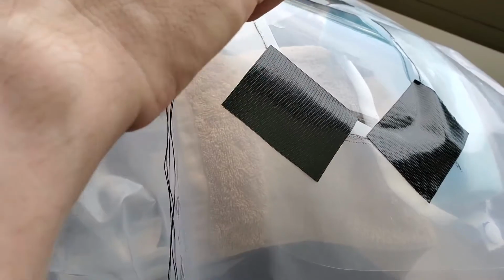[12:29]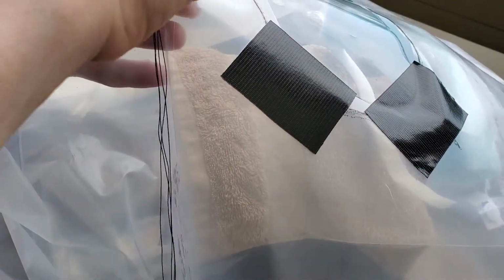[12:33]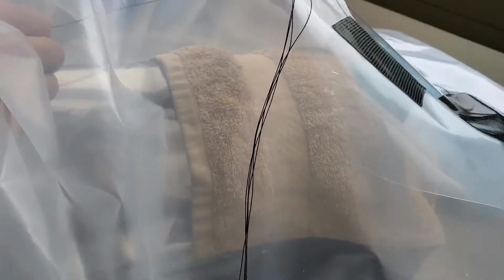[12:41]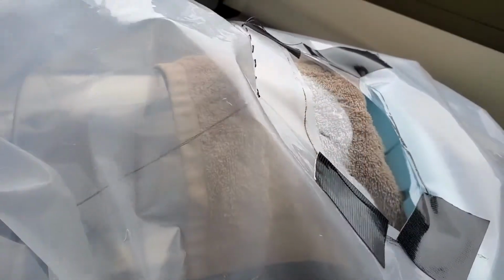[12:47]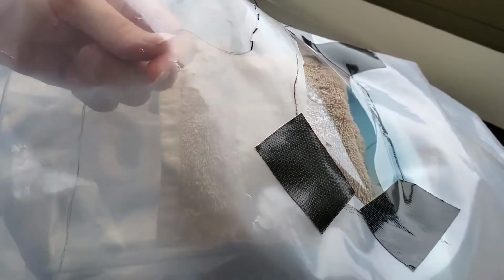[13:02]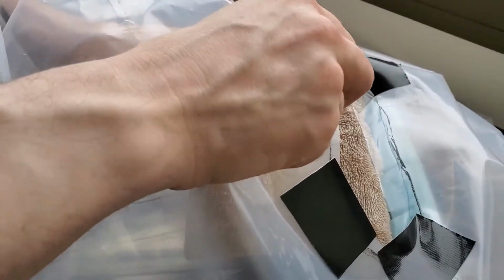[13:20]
You want to have some idea of how many times you have to sew. You can just divide the distance around the area that you're stitching by the distance of each stitch. So it looks to me like this is easily maybe 300 or 400 millimeters around, and at 3 to 5 millimeters at a time, I can expect to make about 100 stitches.
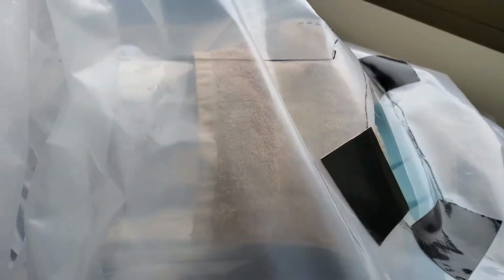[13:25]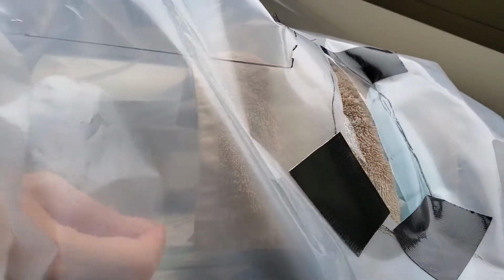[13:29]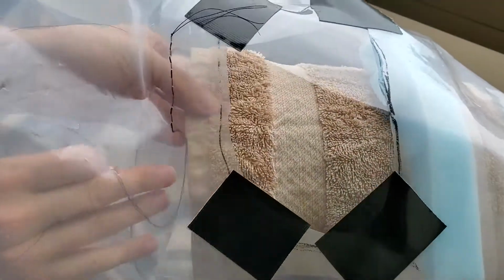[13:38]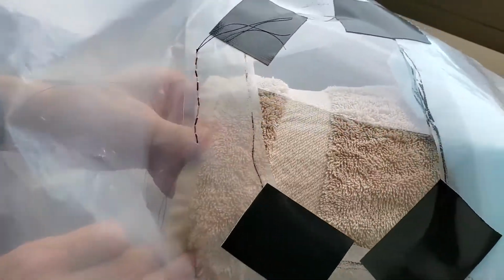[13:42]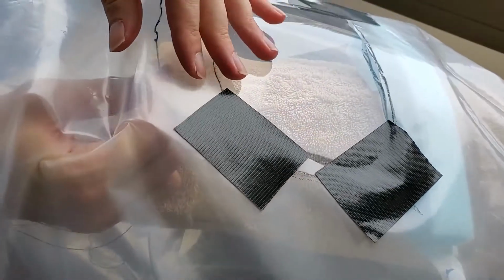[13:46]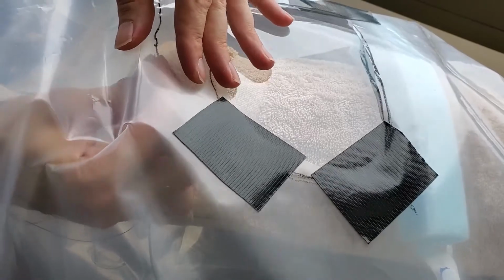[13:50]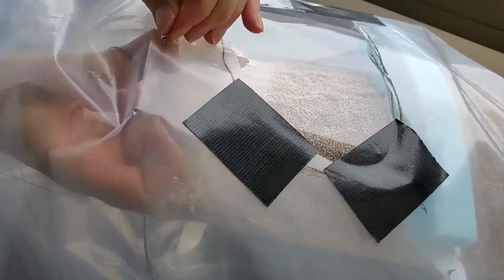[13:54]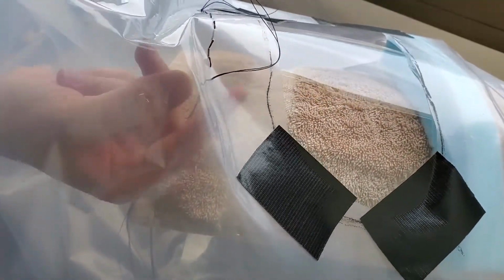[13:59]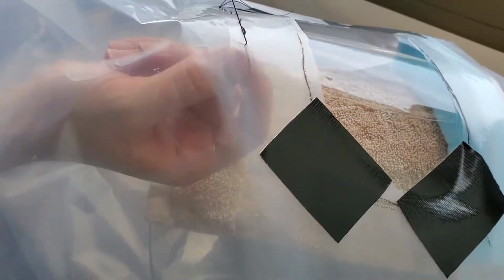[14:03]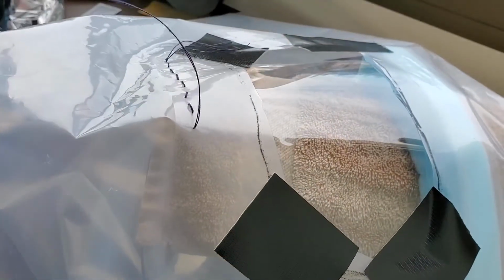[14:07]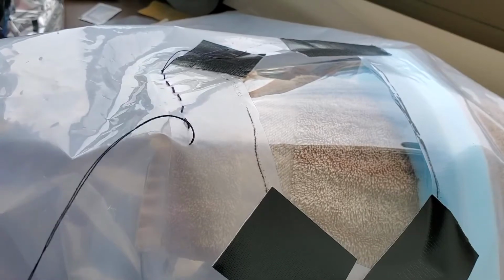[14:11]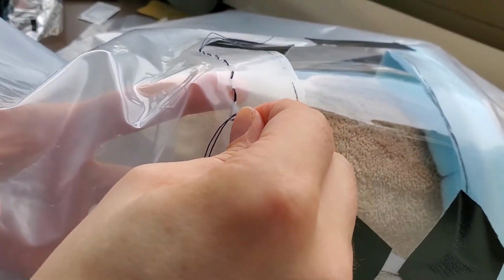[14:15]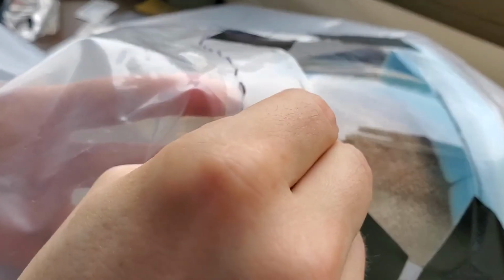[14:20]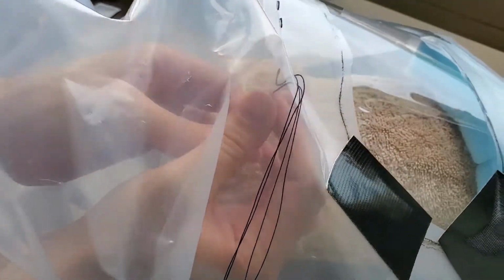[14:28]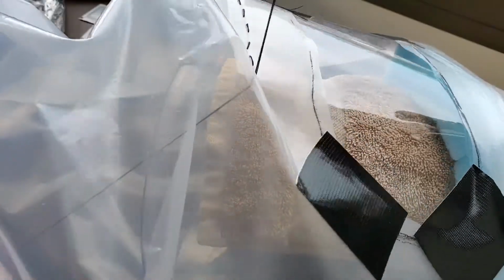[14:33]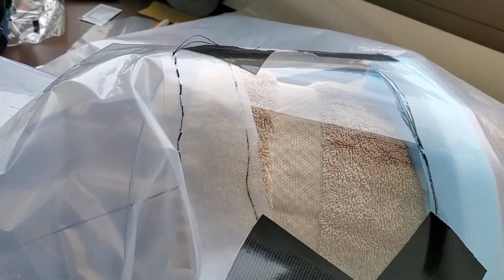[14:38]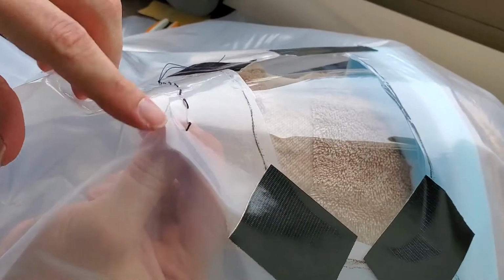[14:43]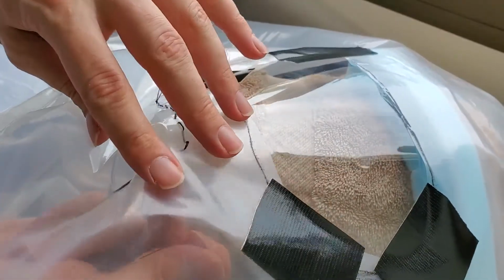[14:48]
It can also help to mark in advance where you're planning to stitch, because that can avoid the problem that you see happening with me, where a little bit of impatience is causing me to make some stitches that are farther apart than I had intended. This one and that one. That one's closer to my target of 3 or 4 millimeters.
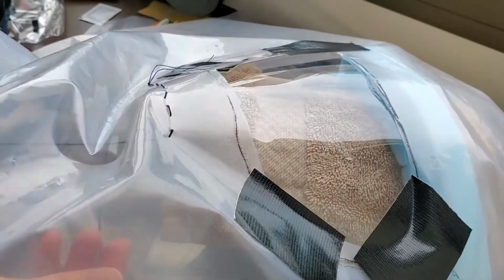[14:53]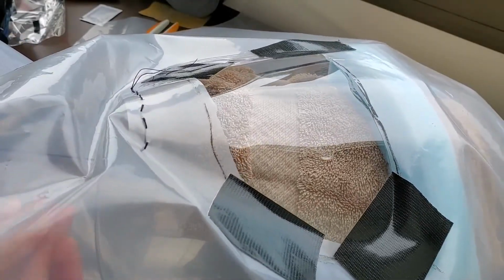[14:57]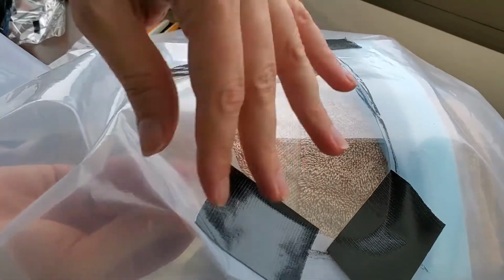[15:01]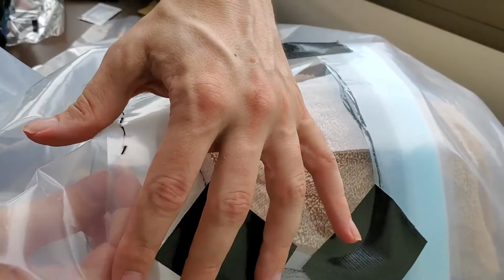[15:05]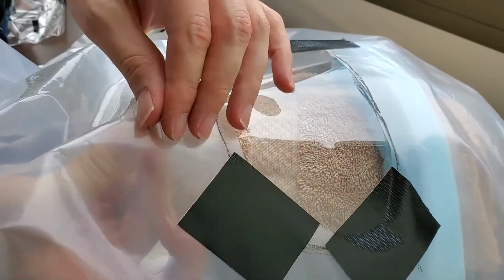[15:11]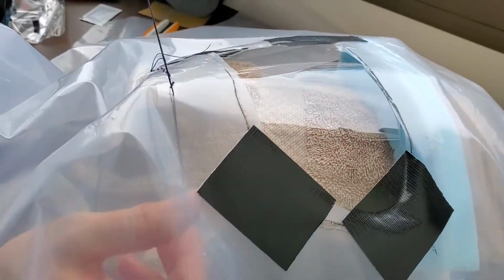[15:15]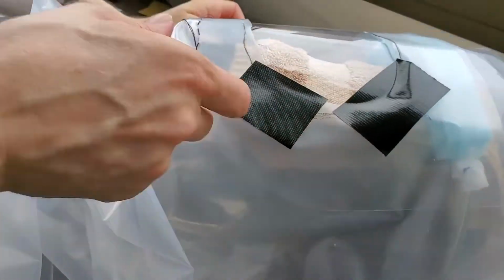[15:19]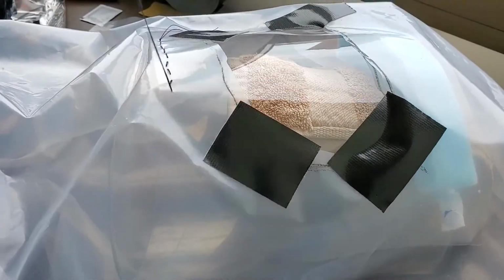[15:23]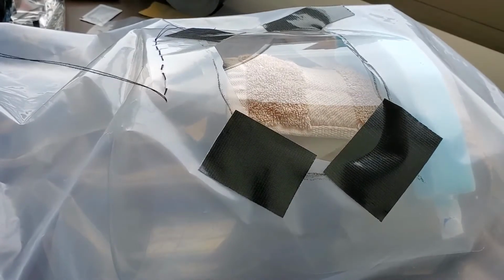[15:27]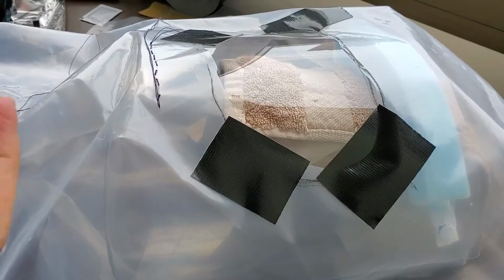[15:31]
As I stitch, I'm trying to also maintain the curvature between the two layers of plastic as I go around, though this bag might actually have enough flexibility so that it will accommodate some imperfections in the curvature.
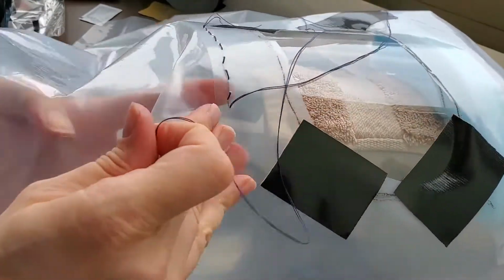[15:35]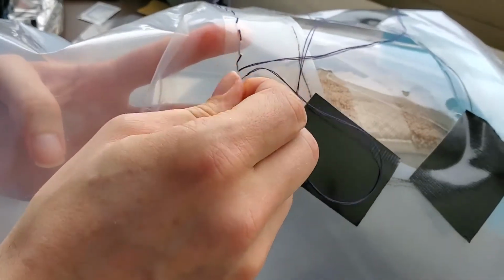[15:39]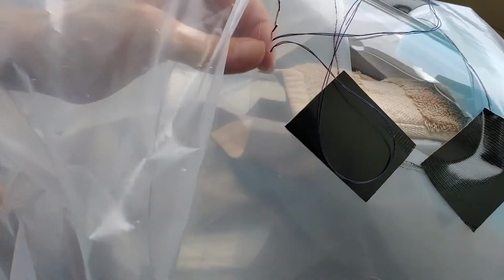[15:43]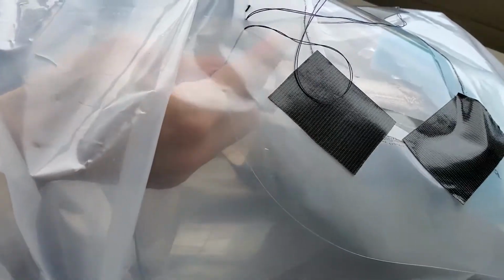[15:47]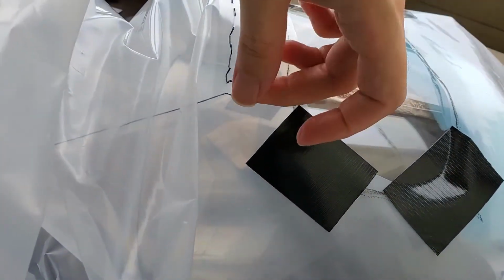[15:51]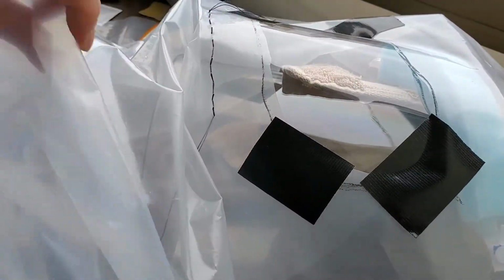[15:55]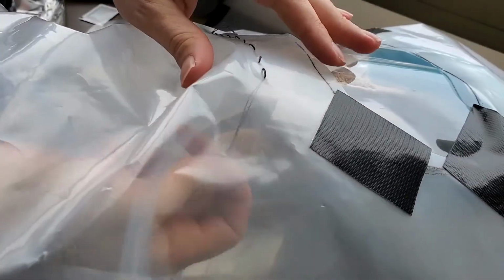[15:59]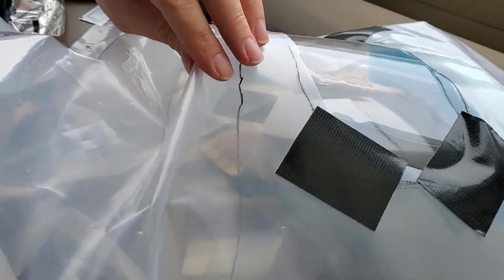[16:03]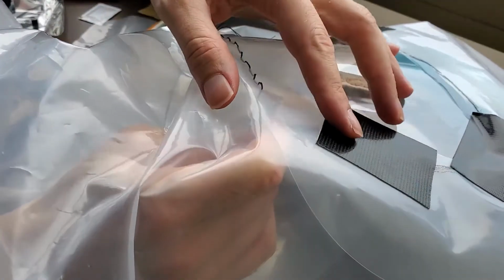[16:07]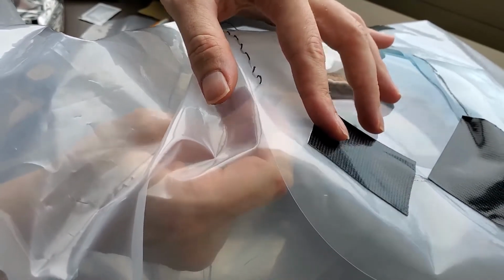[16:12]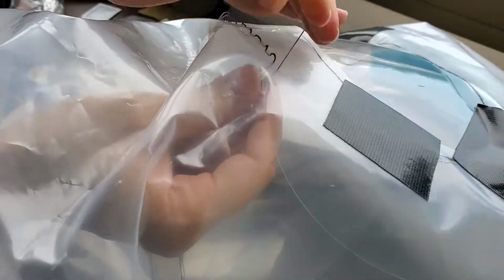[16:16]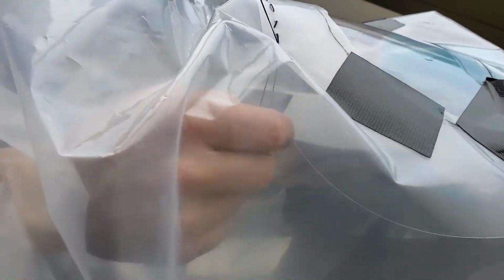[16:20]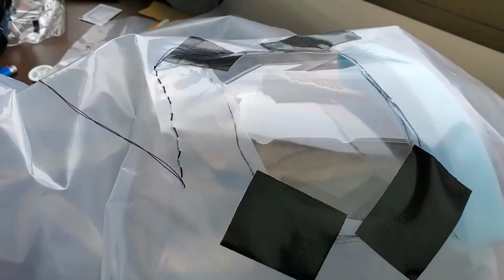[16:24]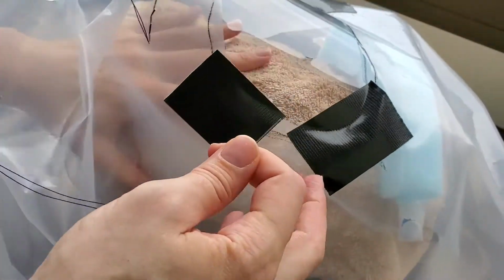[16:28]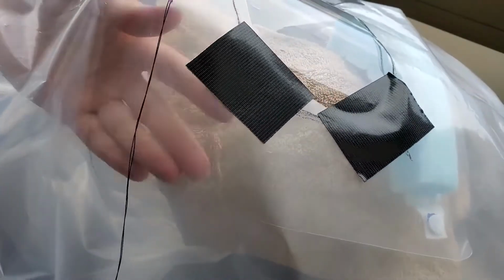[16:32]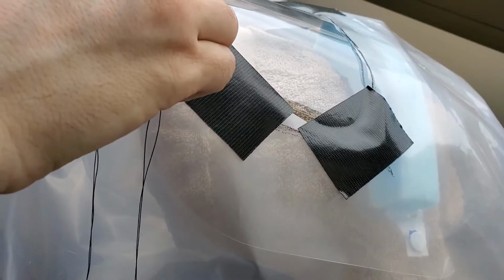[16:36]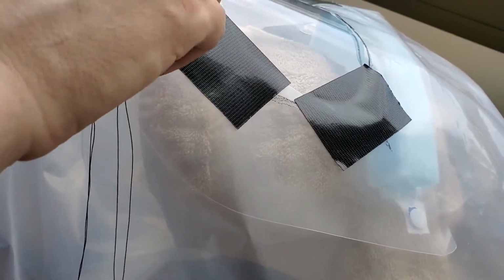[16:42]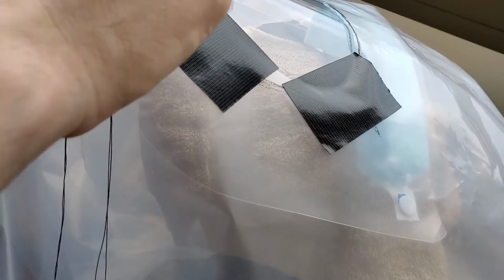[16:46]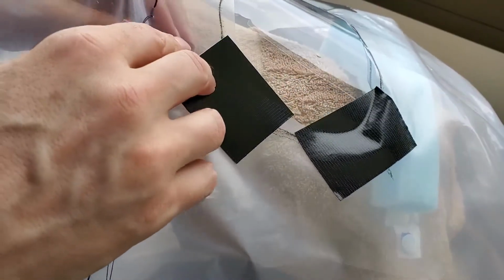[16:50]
So I am maybe 1/10 of the way around. So maybe 100 minutes, assuming that I get more practice and a little bit quicker as I go. So consider probably about 2 hours of time to stitch your hood, more or less, depending on exactly the methods that you use. If you have a sewing machine, that could help a lot. This hole's a little larger or farther apart than intended, but since I already made the hole, I'm going with that.
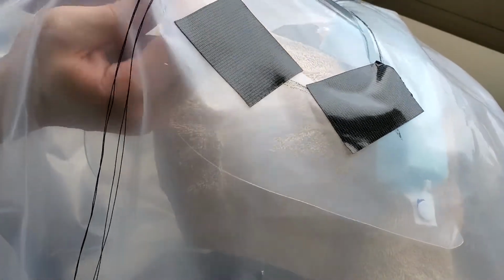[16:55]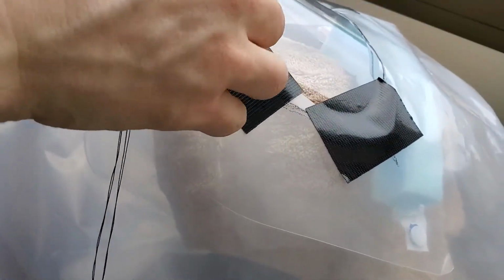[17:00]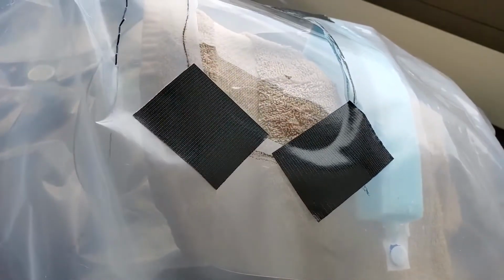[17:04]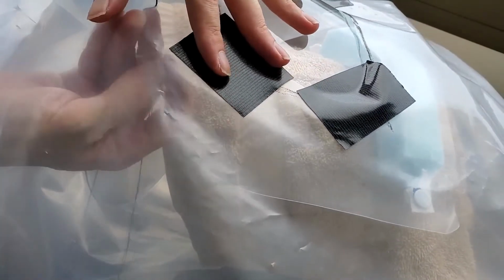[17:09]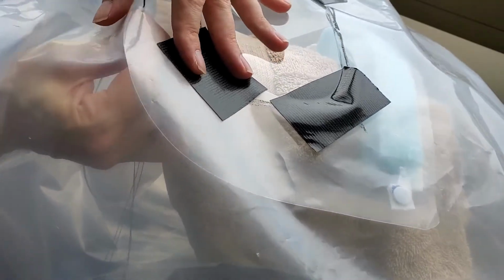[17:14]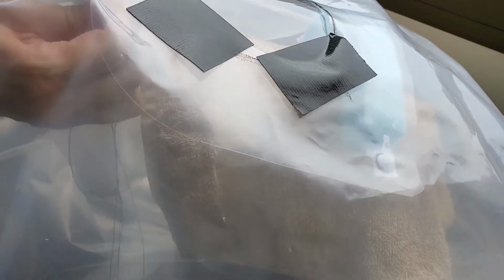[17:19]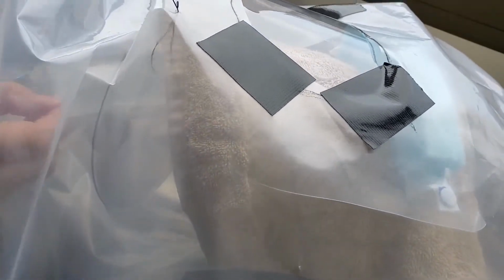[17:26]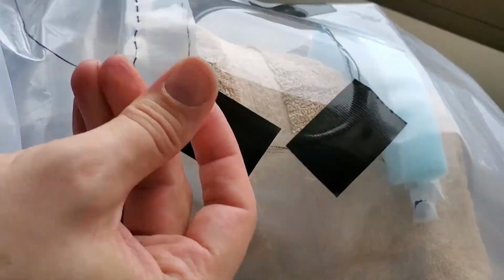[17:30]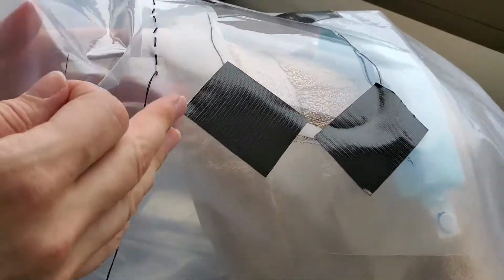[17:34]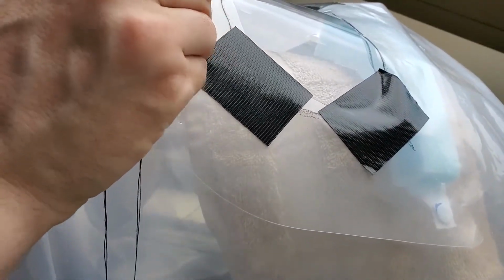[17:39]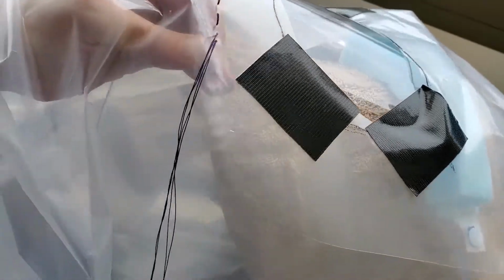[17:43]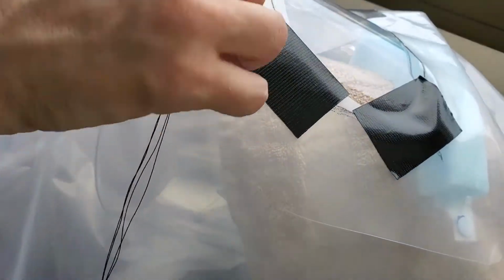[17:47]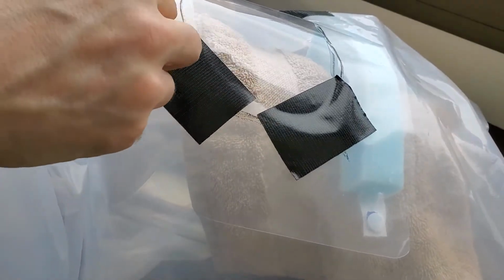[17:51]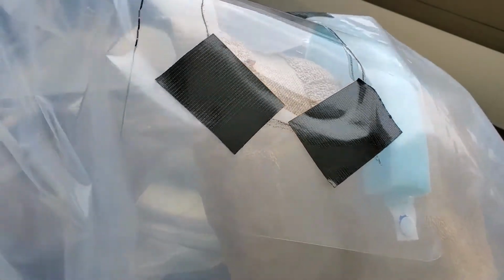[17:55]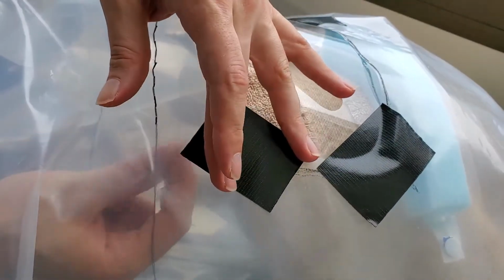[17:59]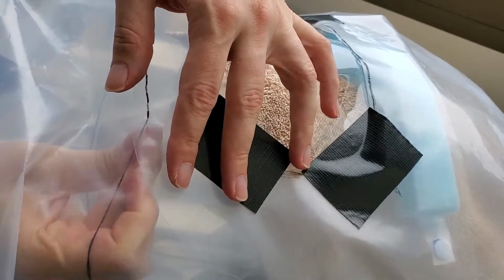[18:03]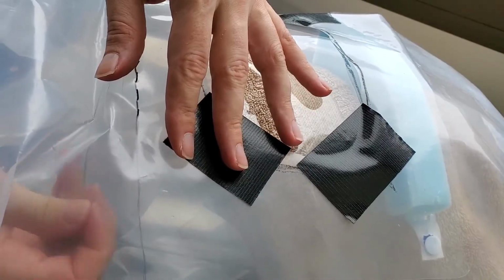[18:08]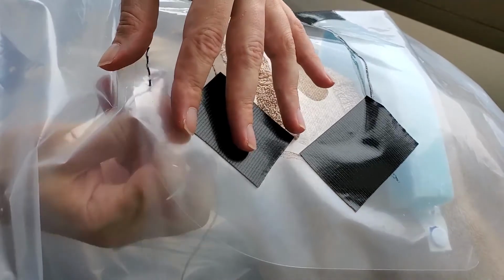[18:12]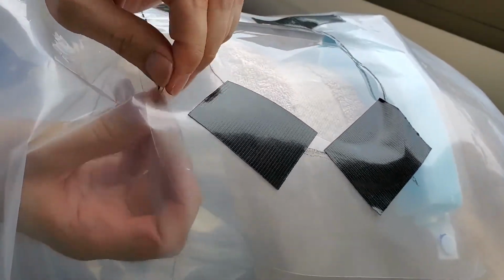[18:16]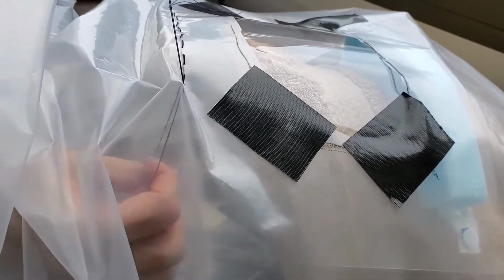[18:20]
I keep doing this a lot. It's certainly toughened the skin on my fingers some. I think I will stop this at around 20 minutes. As I said, the camera will eventually stop itself anyway from having a limited amount of memory.
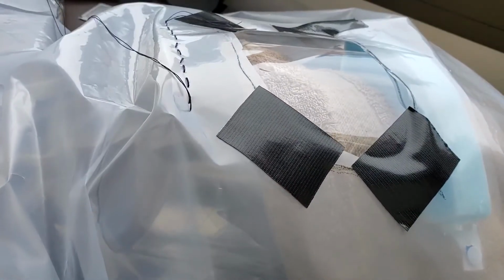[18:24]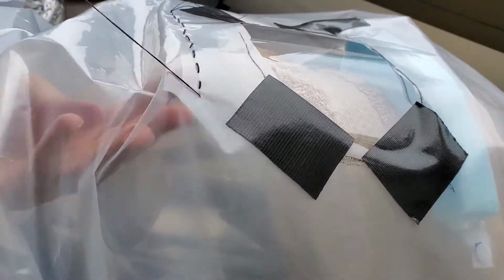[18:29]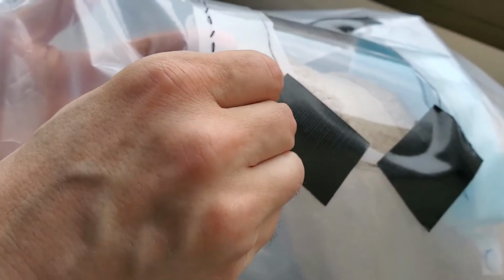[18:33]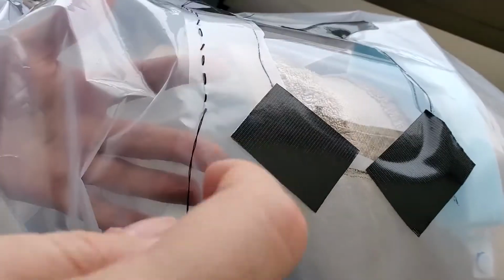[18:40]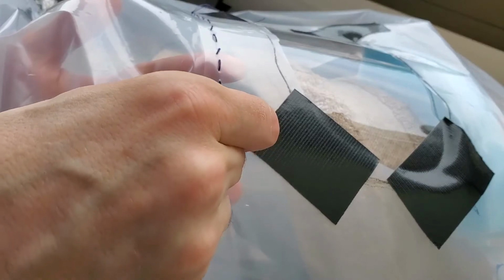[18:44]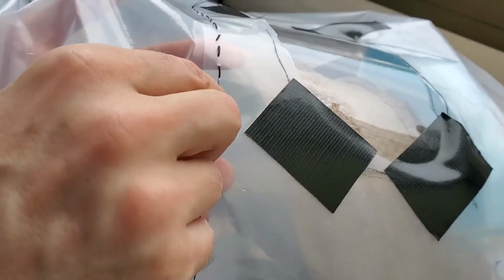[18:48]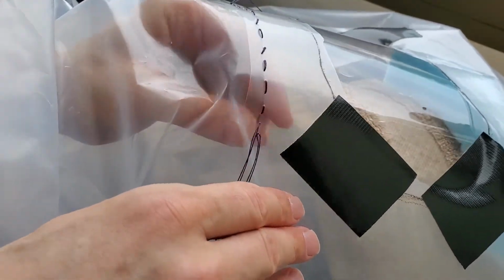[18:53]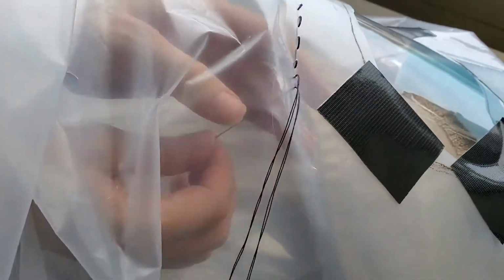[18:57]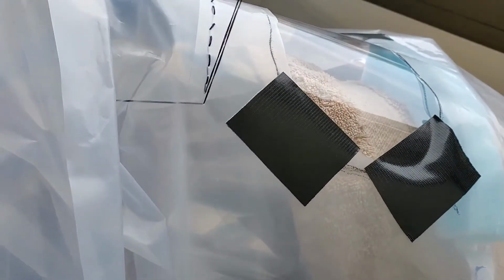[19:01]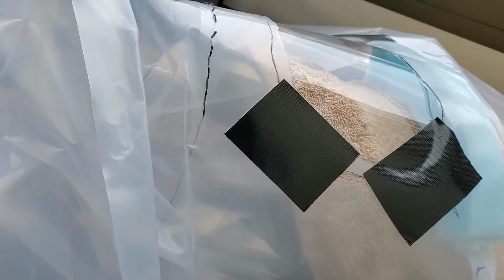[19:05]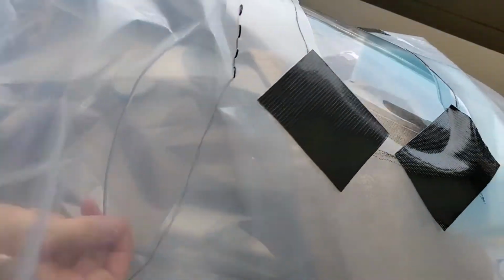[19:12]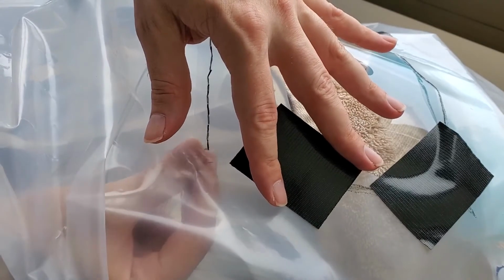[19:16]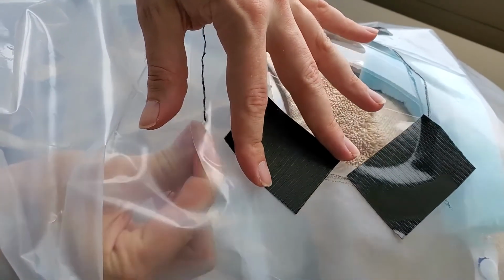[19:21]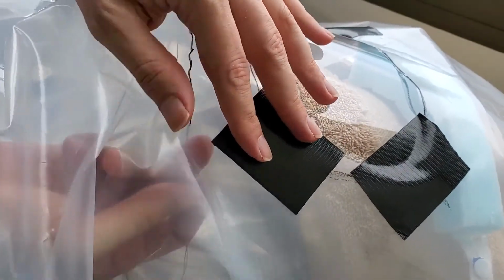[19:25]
What you can kind of do is just multiply the time by how much farther I need to go around. So it looks like 1, 2, 3, 4, 5, 6, 7, 8. I don't think I've spent the entire 20 minutes of this video sewing. I will be optimistic and say I've only really been sewing for 10 minutes, which would mean I have about 70 minutes to go, so a little bit more than an hour. I'll make another video when I'm done so that I have some idea of exactly how long it took.
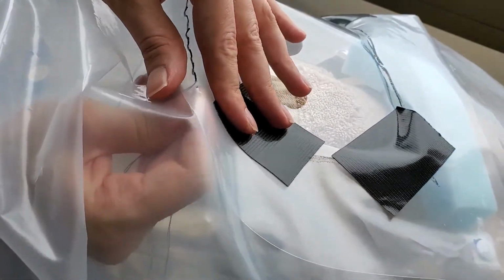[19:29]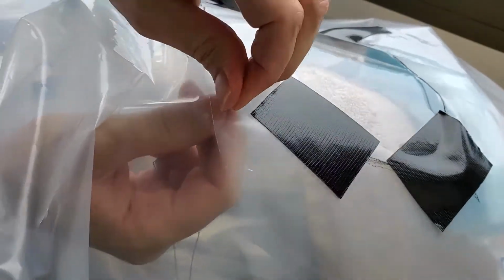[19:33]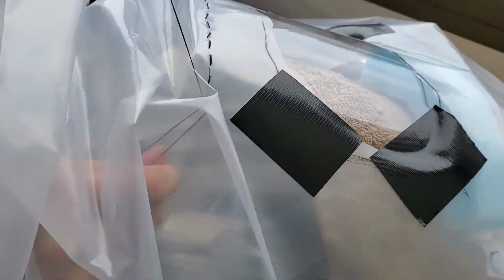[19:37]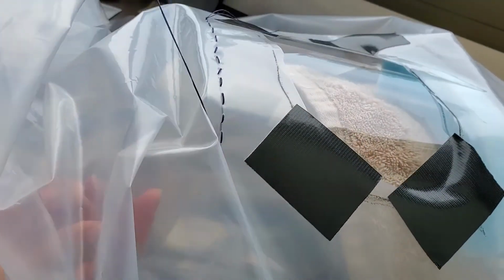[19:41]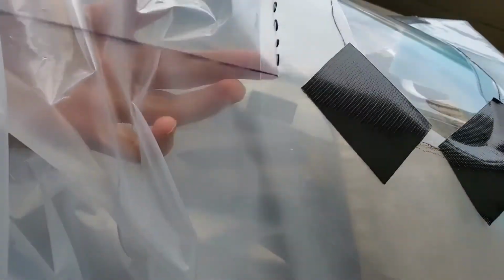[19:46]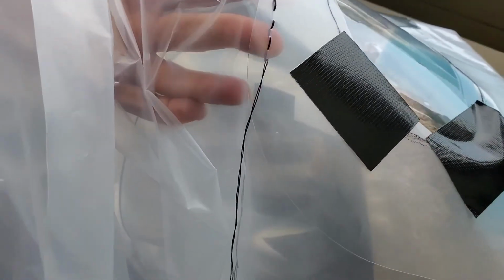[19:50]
Computer, what time is it? The time is 2:58 p.m. So it's 2:58 p.m. right now. I'll make another video when I'm done with this, so we'll have some idea of how long it actually took.